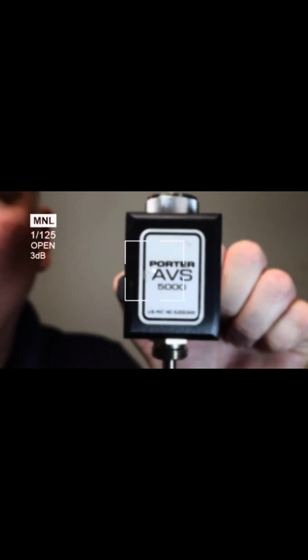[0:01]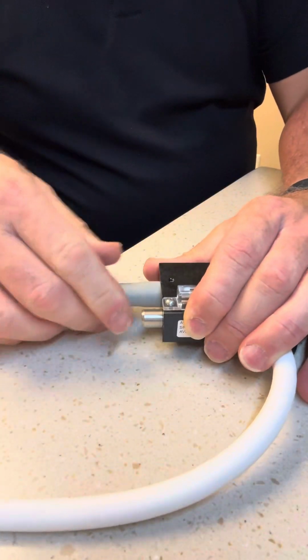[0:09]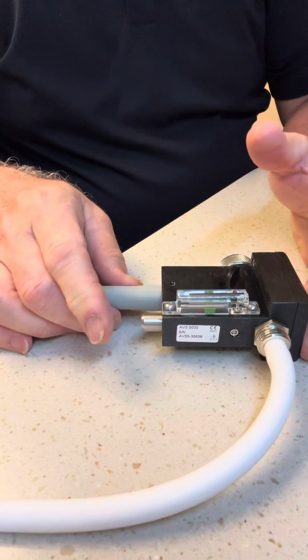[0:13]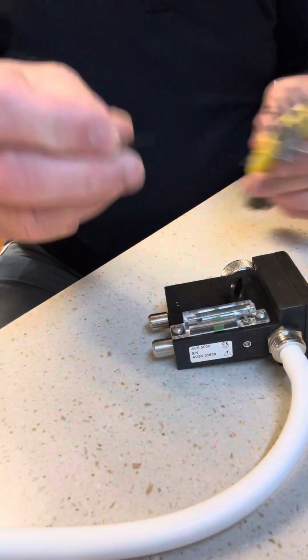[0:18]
This is the Porter AVS 5000, and if it leaks suction when you turn it off, I'm going to show you how to fix that. When you pull the suction for the mask off, it should stop, and you shouldn't hear any suction, but it seems like doing that. So we have suction right there.
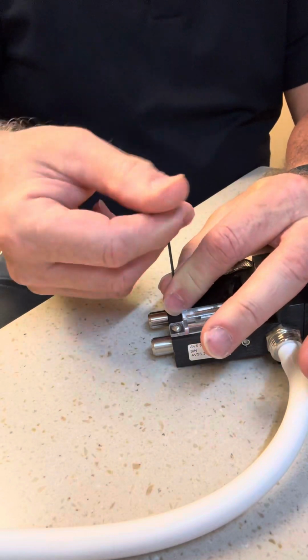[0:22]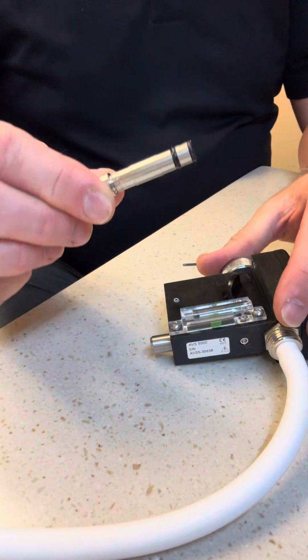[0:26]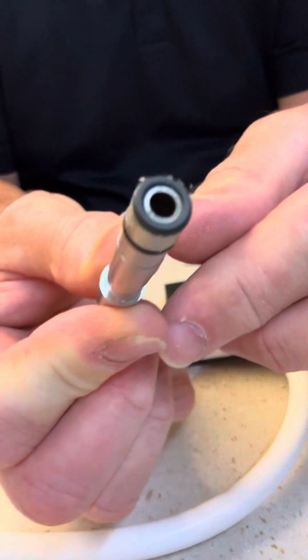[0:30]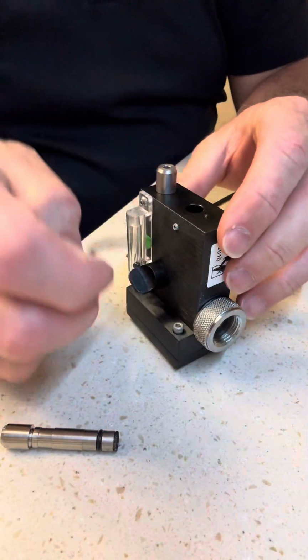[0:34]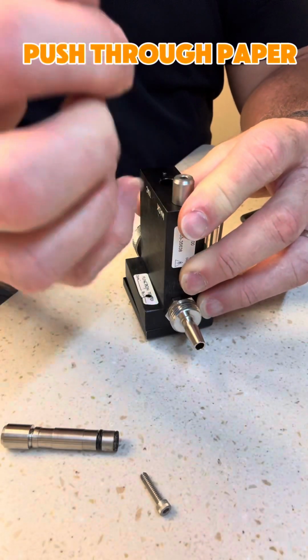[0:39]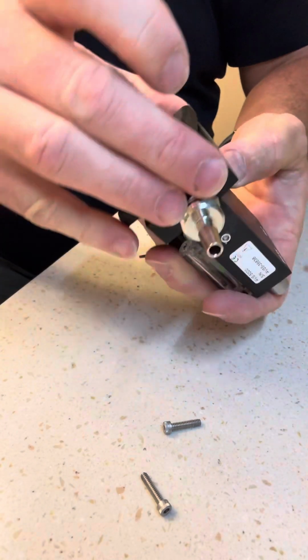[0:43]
We're going to remove the set screw or loosen it. Then we're going to pull out that piece, which you can see it has dust on the top of it. That's what's causing it to not close off. And so we're going to go inside and clean it up right now. We're going to take away these set screws and remove the top of the AVS.
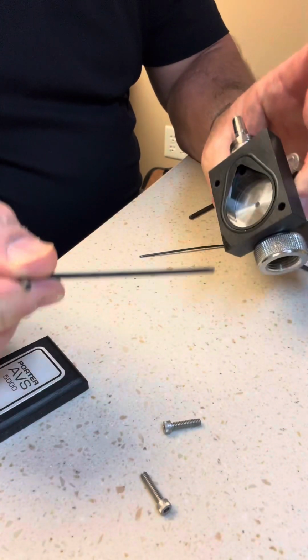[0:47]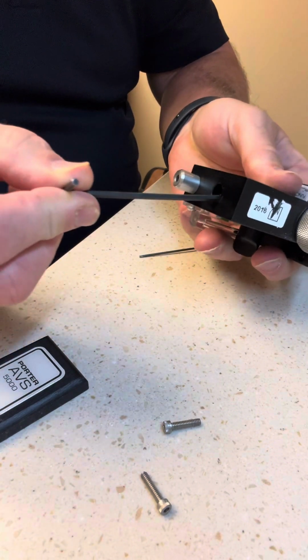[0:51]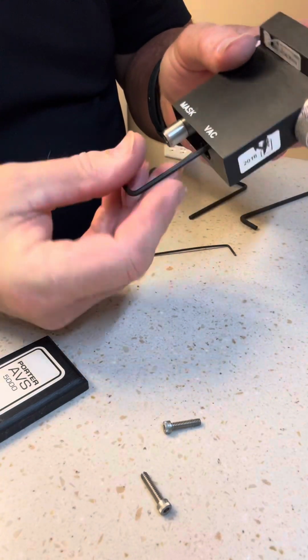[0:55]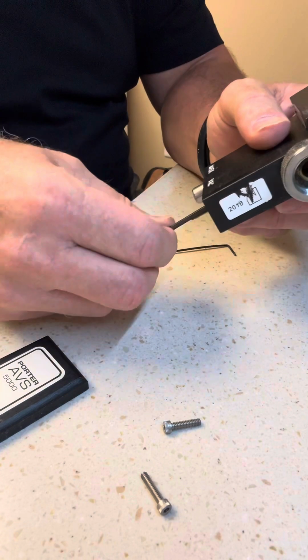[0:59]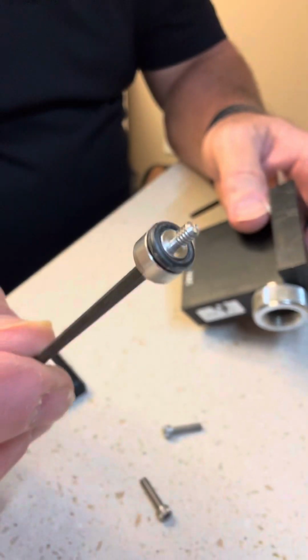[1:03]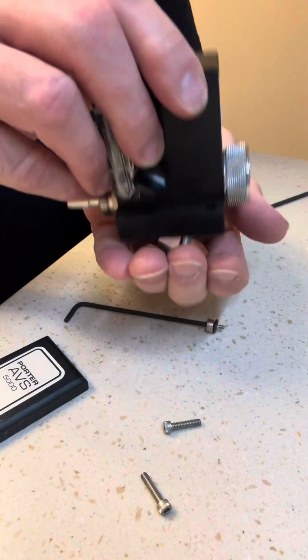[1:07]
Little cap there. It is the same size Allen key as what goes in the bottom, which removes that little piece that holds the cap in on the vacuum side. We're going to unscrew that, take it out, and check that also for dust, but it looks okay. So now we're just going to clean it all up and put it back together.
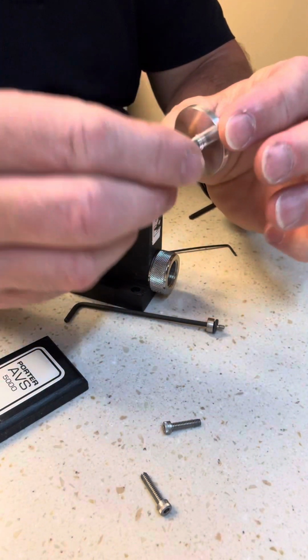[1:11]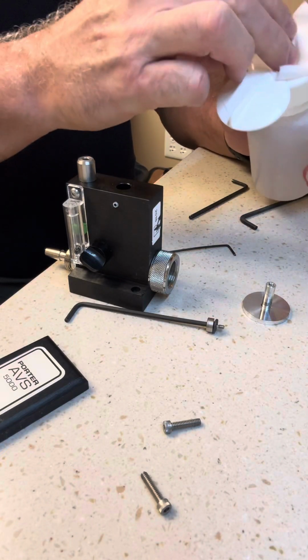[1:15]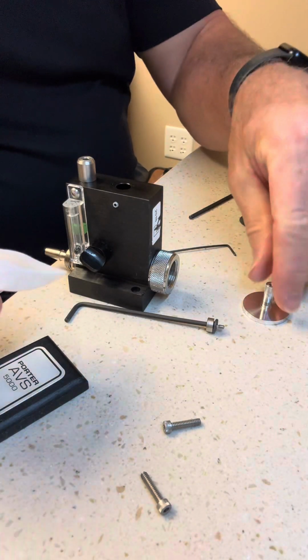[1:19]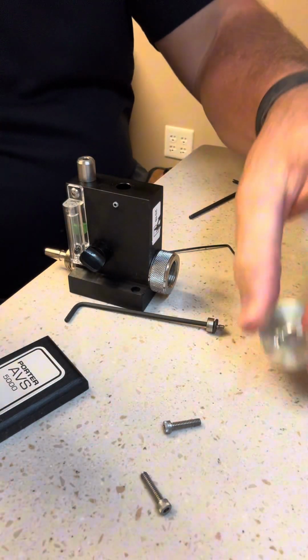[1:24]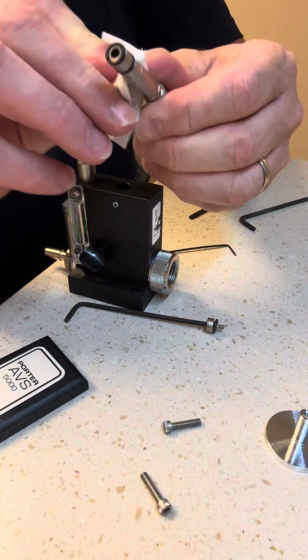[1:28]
So keep watching. I'm using a mild cleaner here, and I'm going to just use a little bit, and then I'm going to wipe off the pieces and make sure that before I reinstall, everything is completely dried and there's no residual cleaner left on there.
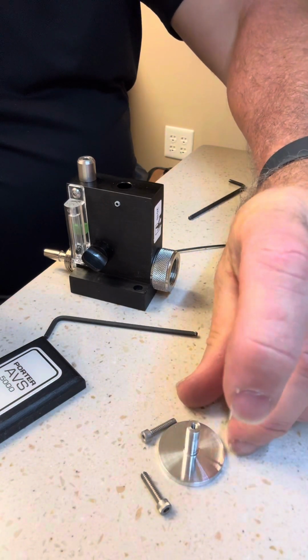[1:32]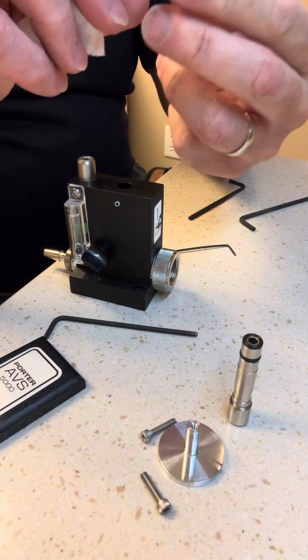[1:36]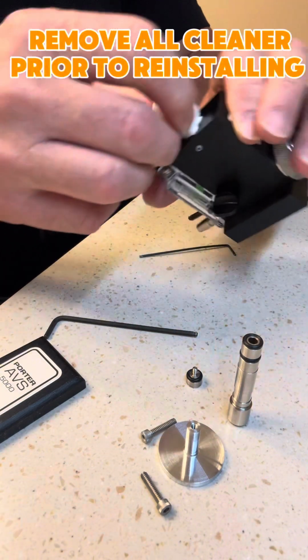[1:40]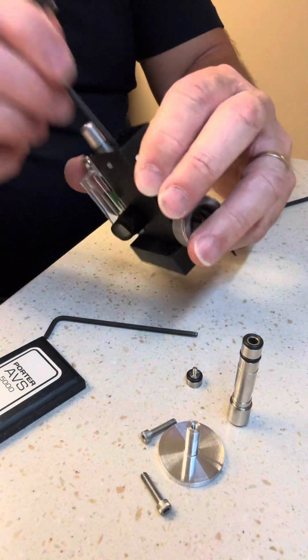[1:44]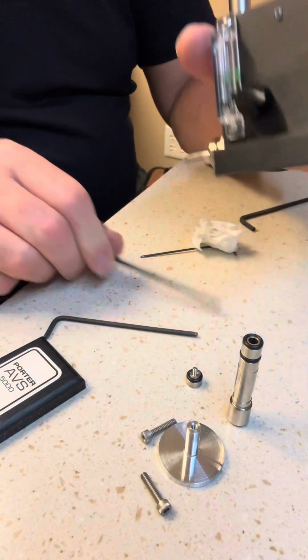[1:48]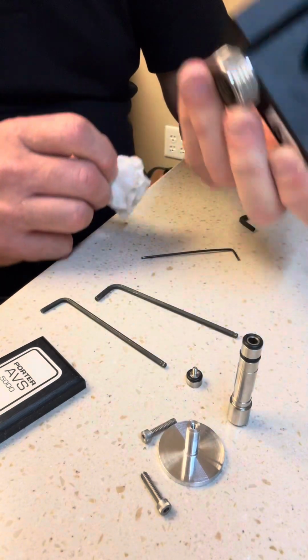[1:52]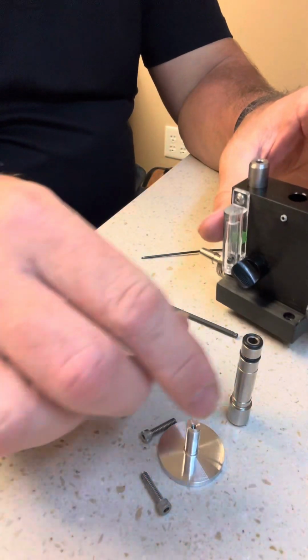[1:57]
So I pushed down this piece of gauze, and then I'm going to push it out through the bottom, kind of like cleaning the barrel of this device that we've just taken out. And I've blown through it a little bit, and now I'm going to reassemble everything. Just making sure that it's dried off.
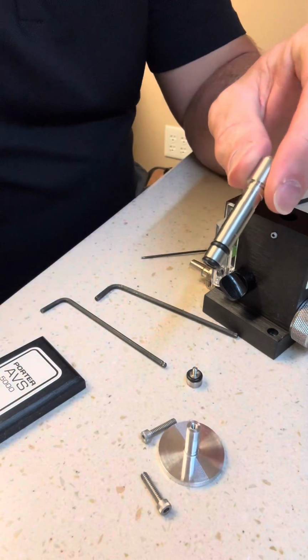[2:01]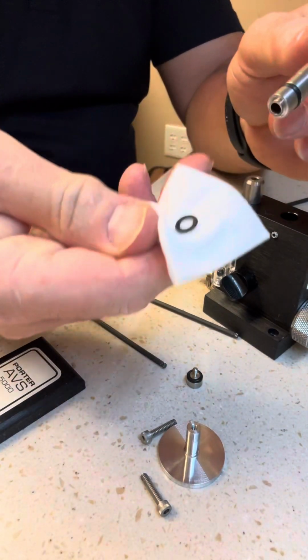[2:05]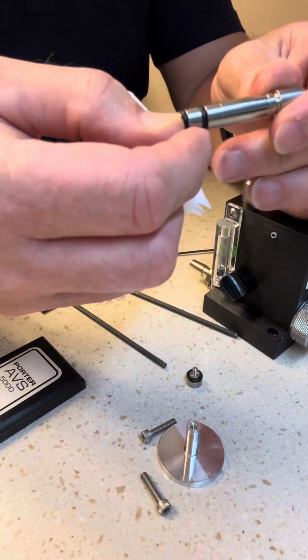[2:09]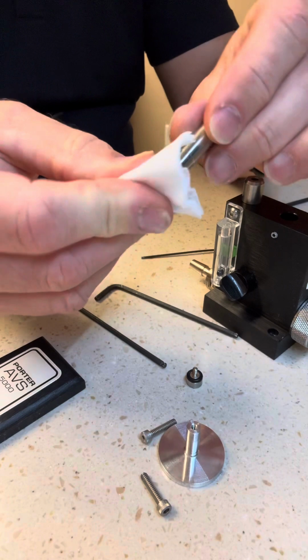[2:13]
I'm going to use a clean piece of gauze here, and I'm going to wipe it all off just to make sure. Oops, that O-ring fell off, so we'll make sure that we put that back into the end where it was without any dust on it. And then we're going to put everything back together.
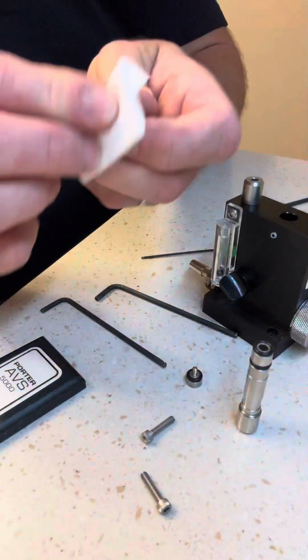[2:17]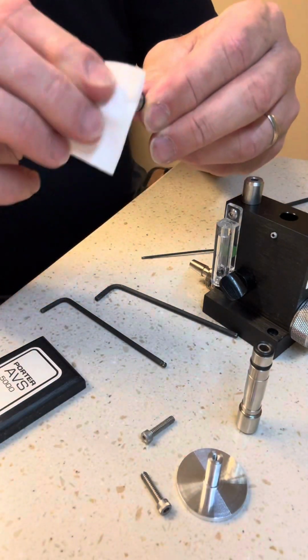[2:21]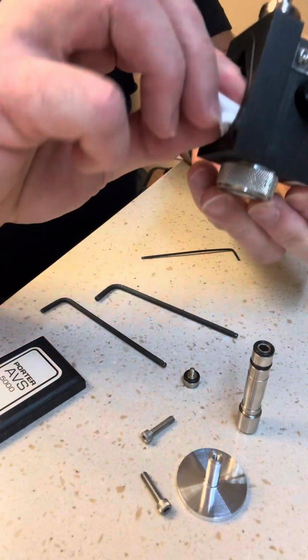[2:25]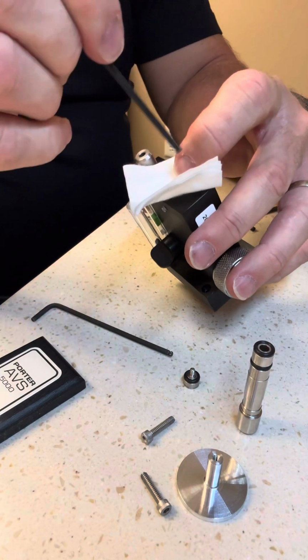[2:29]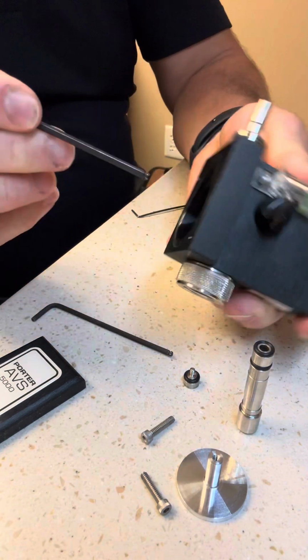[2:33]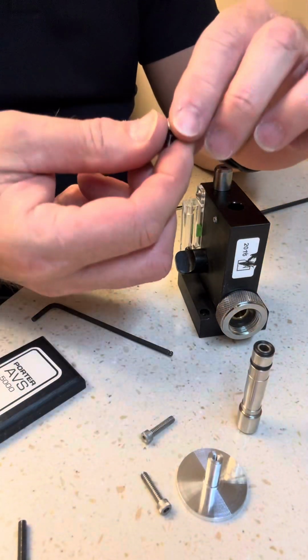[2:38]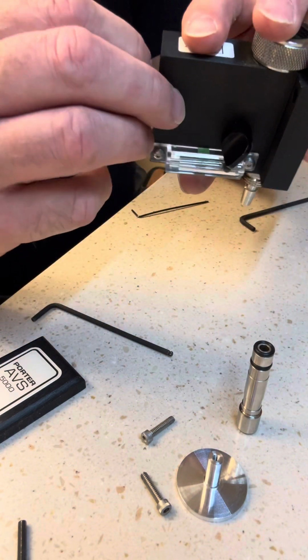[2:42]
So we're drying off all the little pieces and the inside where the pieces go. Then we're going to push this dry gauze through the barrel and push it back out. That helps to make sure everything inside is dried out. Now it's time to reassemble. We're going to put it back in the same way that we took it out.
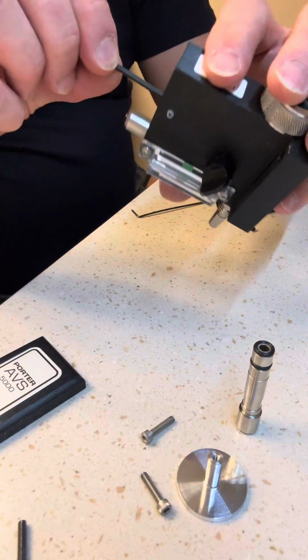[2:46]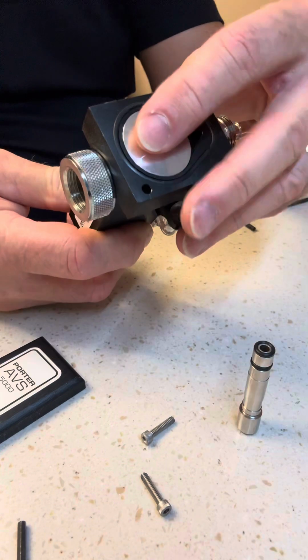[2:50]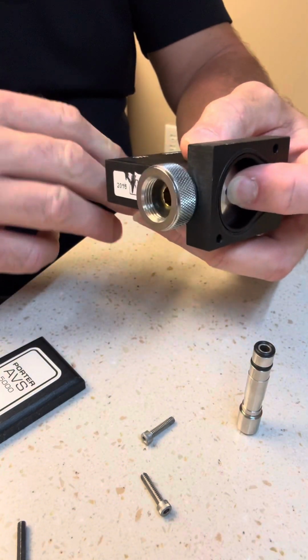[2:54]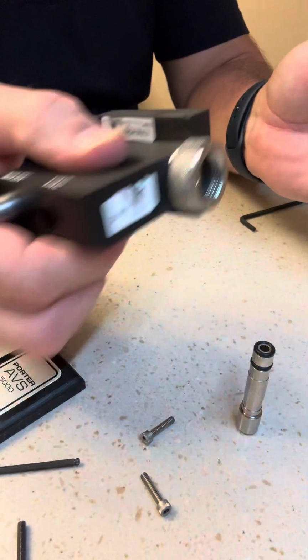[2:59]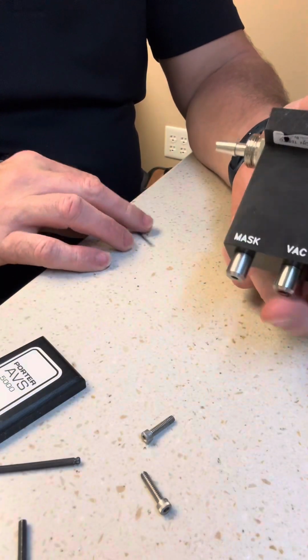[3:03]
This Allen key fits into that little piece that screws into the plunger, which I'm putting in right now. I'm going to hold the plunger with my finger tight so that when I screw the piece that holds it in place, the plunger doesn't move. Now you hear that rocking back and forth. That means it's functioning well.
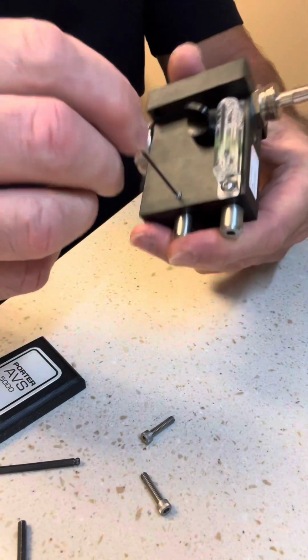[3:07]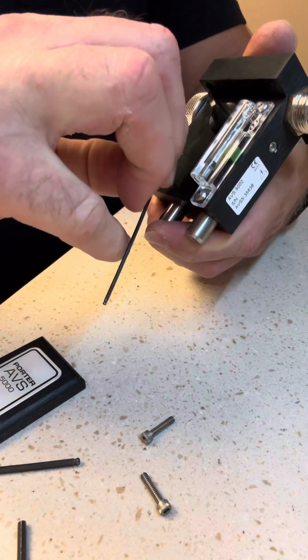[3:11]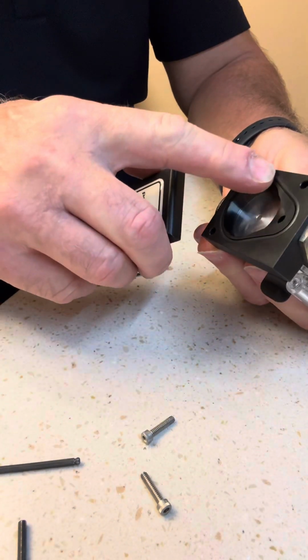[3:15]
Put the barrel back in. I'm going to tighten the set screw. I want to make sure that that's completely seated before I tighten the set screw, and then give it a good tighten. It's usually best to use the short side of your Allen key.
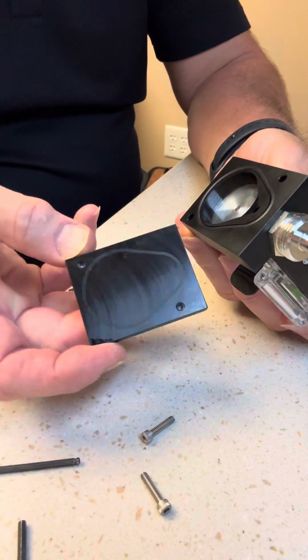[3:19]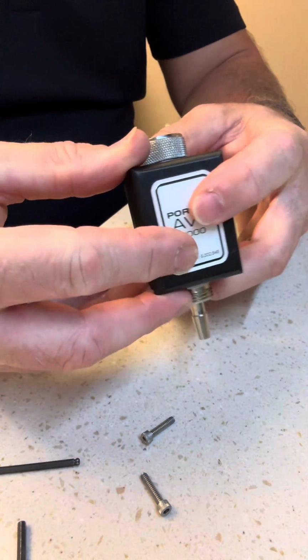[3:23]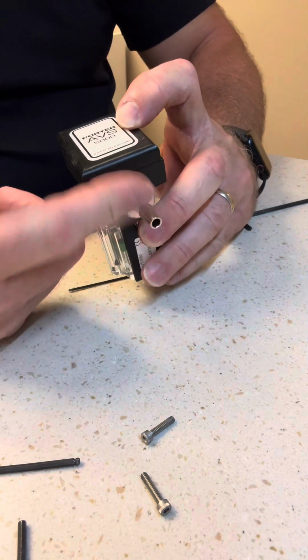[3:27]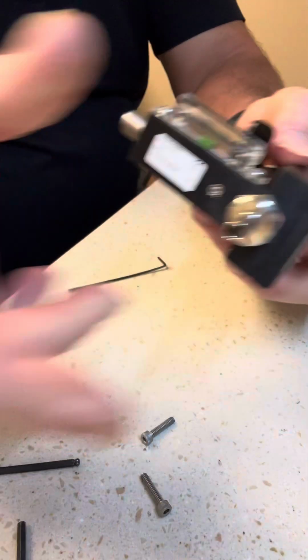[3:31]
You see where the O-ring is and the impression that's on the lid. Now we're going to marry those up and check to make sure it's in the right direction. That's where it screws onto the flow meter. There's the words, and then the bag tee goes on the front. You can see the mask and the vacuum on the other side.
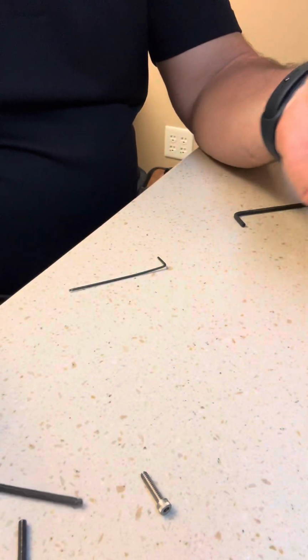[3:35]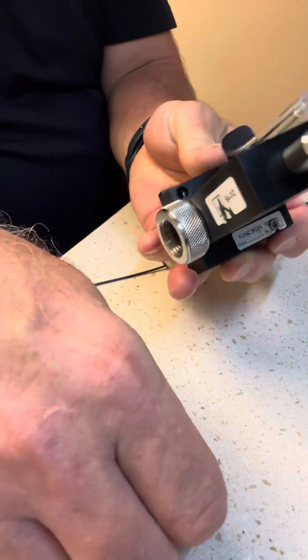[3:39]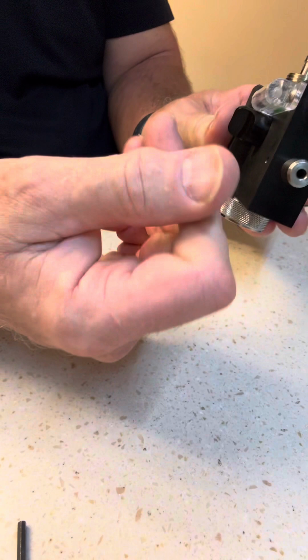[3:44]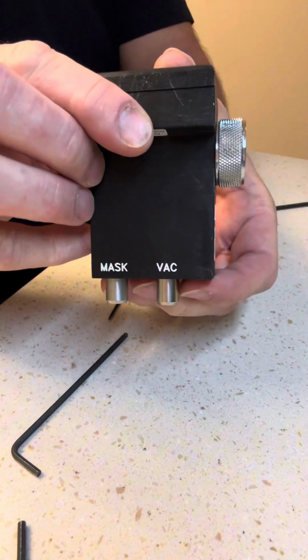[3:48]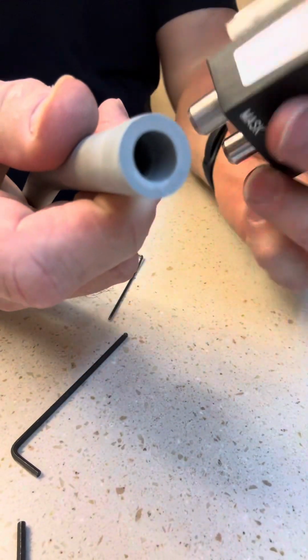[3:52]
See where I put that set screw, you have to push it through the paper, and also when you take it out, you have to undo it through the paper. It says warranty void if you unscrew this, but if it's dirty and you need to clean it, time to just take it apart. Don't worry about the warranty. You hear the plunger dropping and popping?
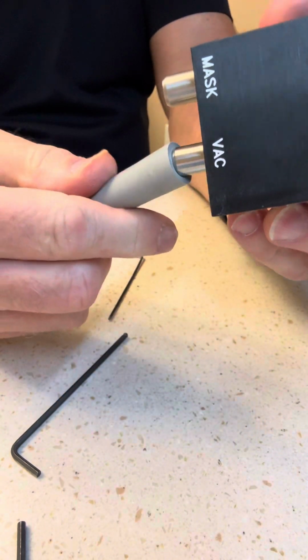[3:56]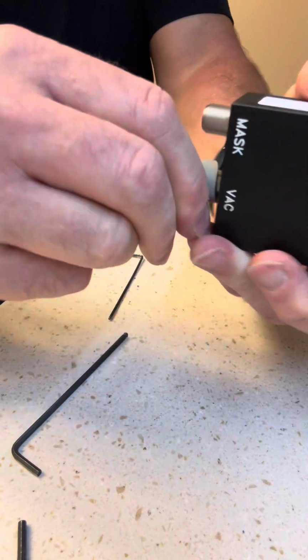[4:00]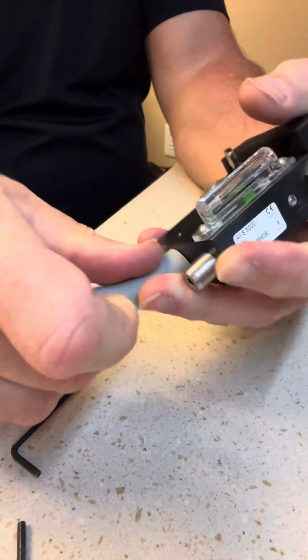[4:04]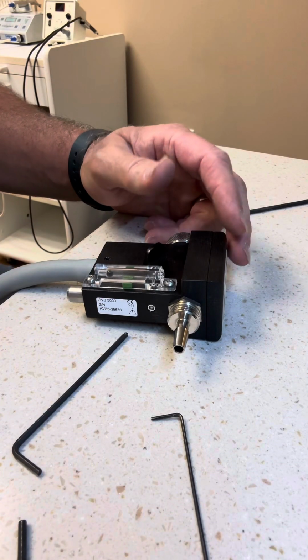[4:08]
So now we're going to apply vacuum back to the vacuum side, and now you'll notice that there's no leaking, meaning on the mask side, that's what was leaking prior to, and now it's not. So we basically have fixed this, and it's good to go.